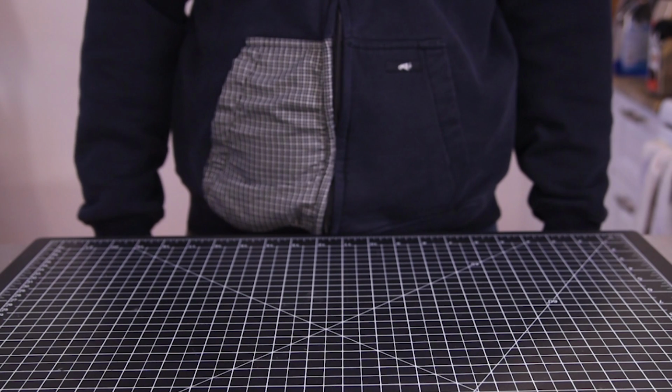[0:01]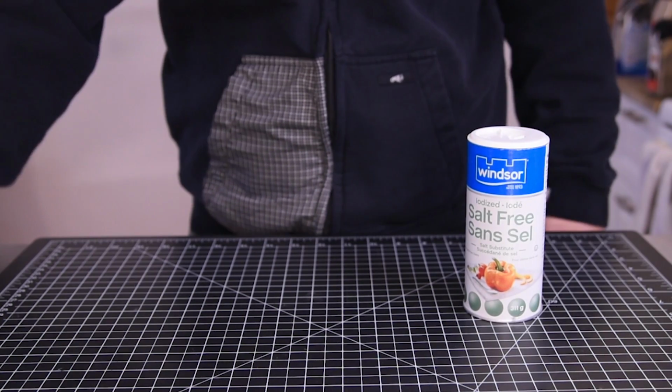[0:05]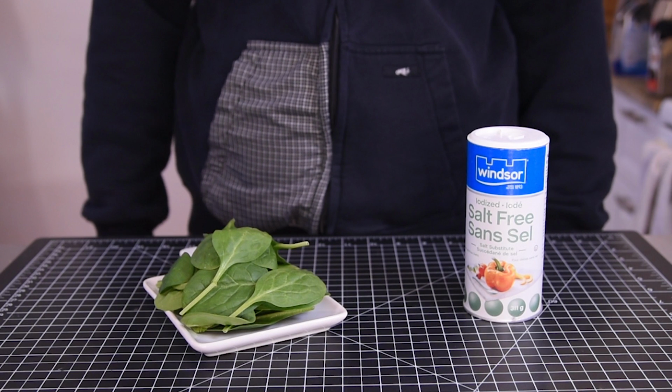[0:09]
Today we're going to be talking about antimatter, so let me just get some really quick. Here we go. And a little more. Perfect. Now, at this point, you're probably thinking that I've finally lost it and the quarantine is getting to me, but fear not, internet stranger, I'm no crazier than I was before.
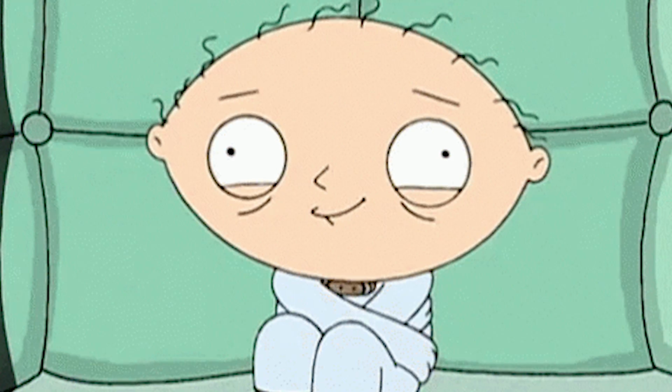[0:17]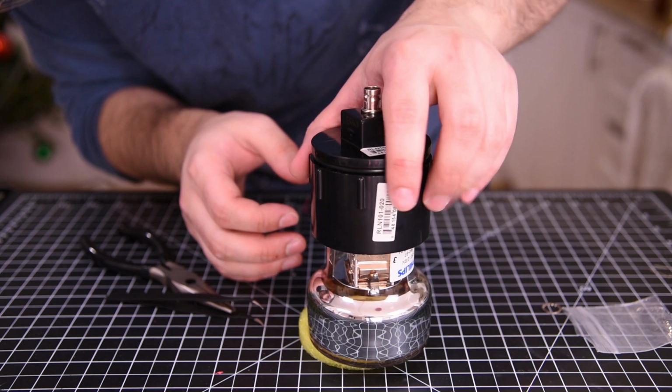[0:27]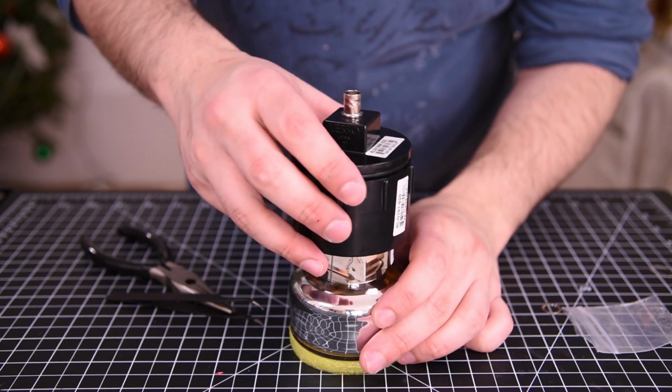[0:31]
I'm not sure if that makes that better, though. Anyway, these items do actually contain antimatter, albeit obviously very tiny amounts, otherwise they'd explode and take out most of the neighborhood as soon as they touched anything. Today, we're going to build a device that will let us detect the antimatter inside here, and in other common items. So first, what is antimatter?
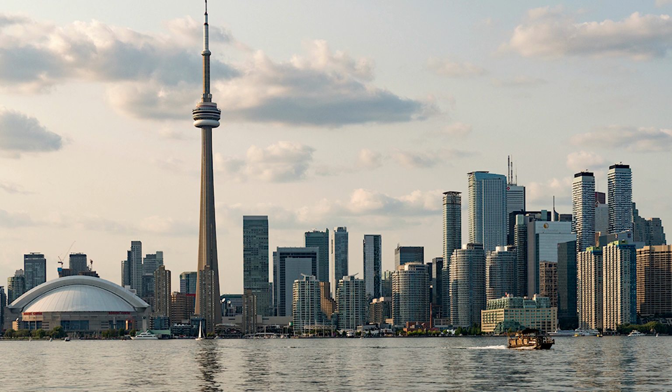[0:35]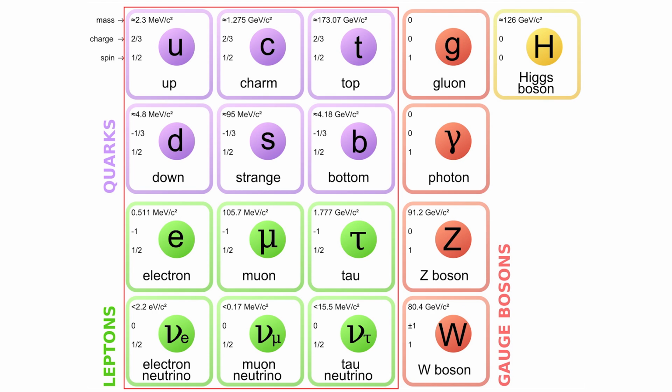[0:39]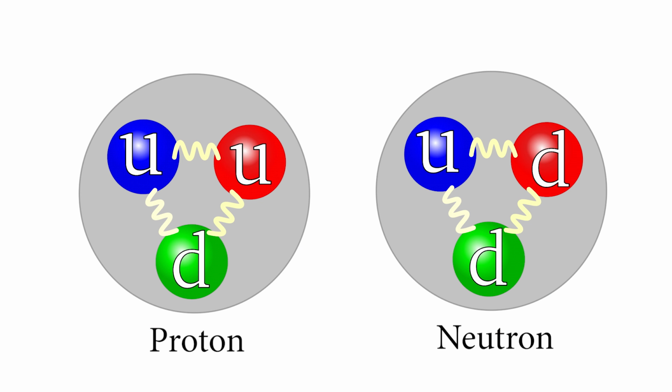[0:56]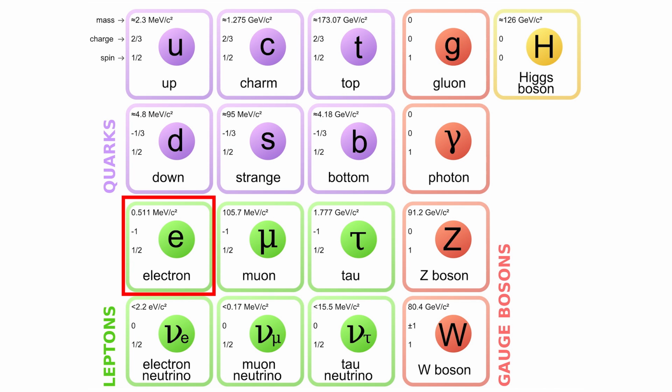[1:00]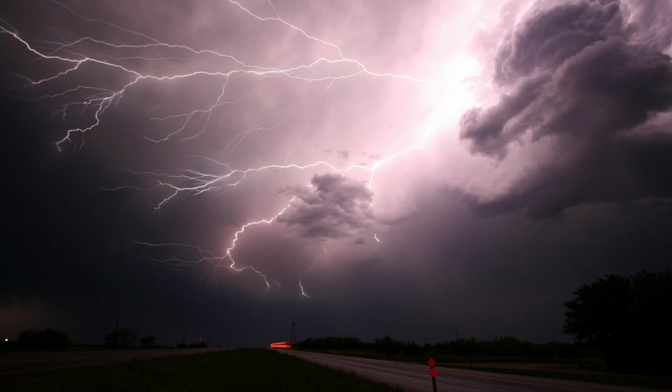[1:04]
Well, everything you've ever interacted with is, well, matter. That is a collection of 12 fundamental particles that can be mixed and matched to make atoms and molecules and just about everything else. These 12 particles make up the standard model of particle physics and are the basis for most modern physics. But of the 12, these three are the ones that you encounter the most. These two are called quarks, and when you get three of them together, they form protons and neutrons, which make up the cores of atoms.
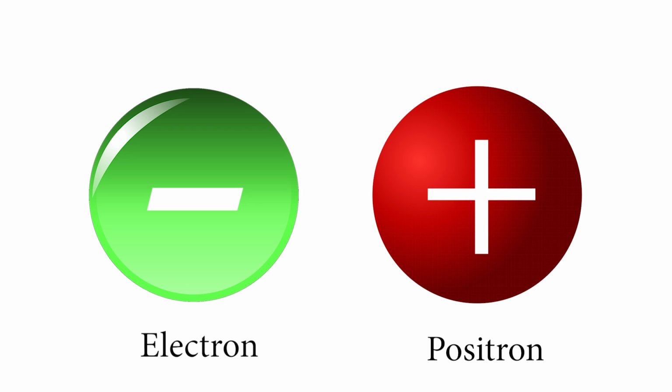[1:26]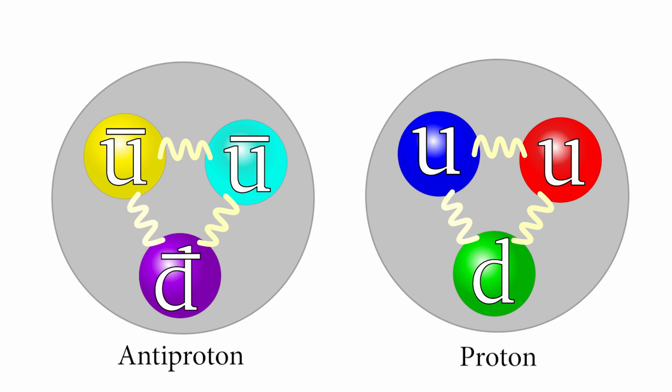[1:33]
And then this one is the humble electron, which is responsible for holding different atoms together, electricity, and lots of other phenomena. But as it turns out, all of these particles actually come in two flavors: matter and their antimatter counterparts. The weird part is that antimatter and regular matter are almost indistinguishable. They have the same mass and most of the same properties. The only difference is that their charges are flipped. So an electron, which is normally negatively charged, its antiparticle, called a positron, is, well, positively charged. And if you get enough antiquarks together to form an antiproton, it would be negatively charged, rather than positive like a normal proton is. But other than that, they're identical.
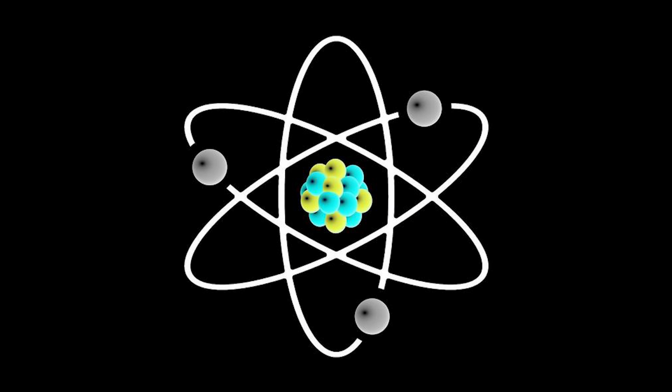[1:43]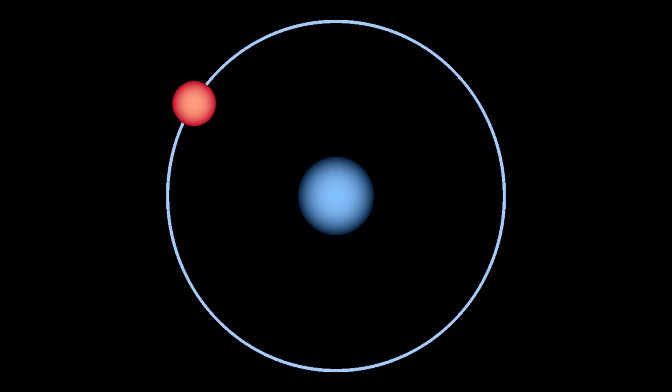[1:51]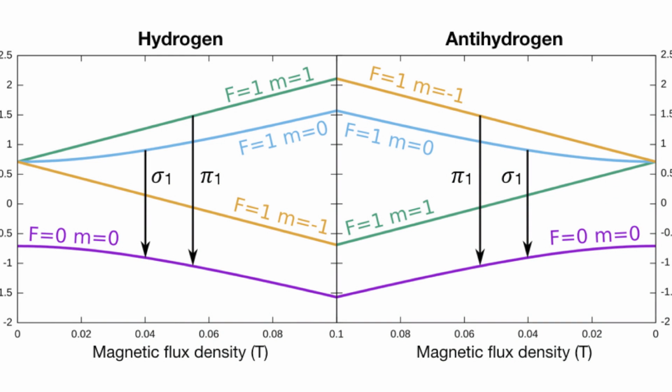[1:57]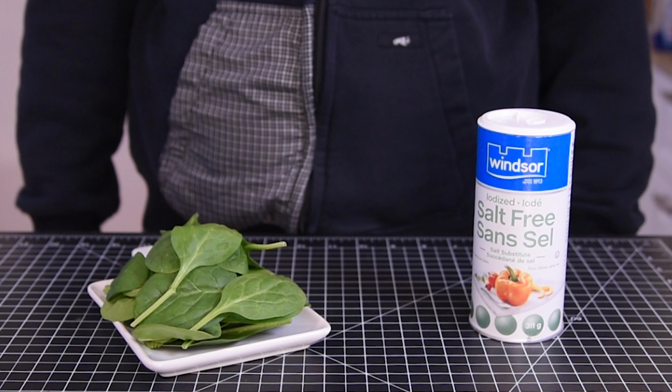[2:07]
You can actually make entire atoms using nothing but antiparticles, and their properties, as far as anyone can tell, are the same as normal atoms, other than that charge flip. Scientists have made antihydrogen, for example, using antiprotons and positrons, and when they looked at the spectrum of light it puts out when you excite it, it was identical to normal hydrogen, which, personally, I find fascinating and very, very weird. So now you're probably wondering, well, okay, how does that relate to my spinach and salt? Where's the antimatter in that?
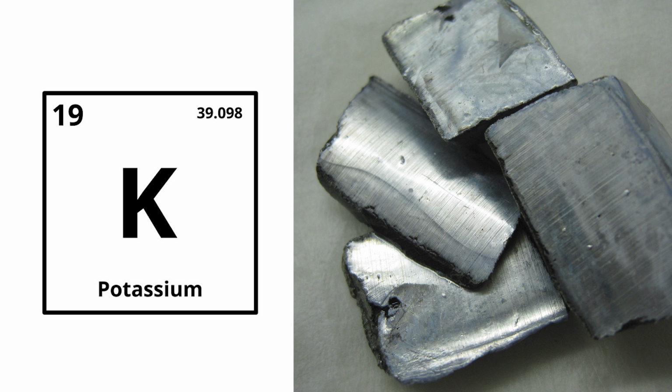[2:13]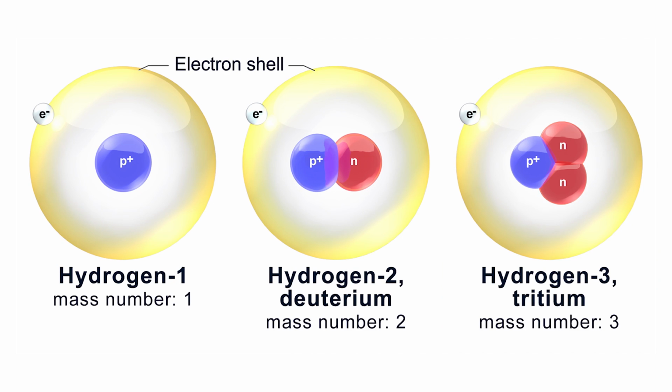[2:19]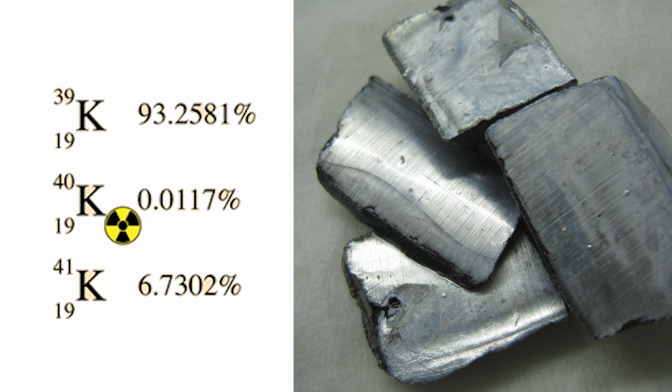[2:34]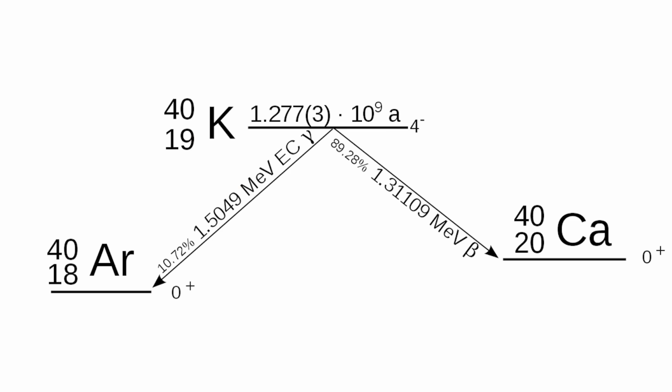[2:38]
The answer comes thanks to potassium. In nature, potassium comes in three forms, known as isotopes. Basically, these are atoms which have the same number of protons, but different number of neutrons, making some slightly lighter or heavier. Remember, we classify elements by the number of protons, so as long as that doesn't change, they're all considered the same element. One of these isotopes, potassium-40, is ever so slightly radioactive and unstable, so over time, it'll eventually decay into either calcium-40 or argon-40.
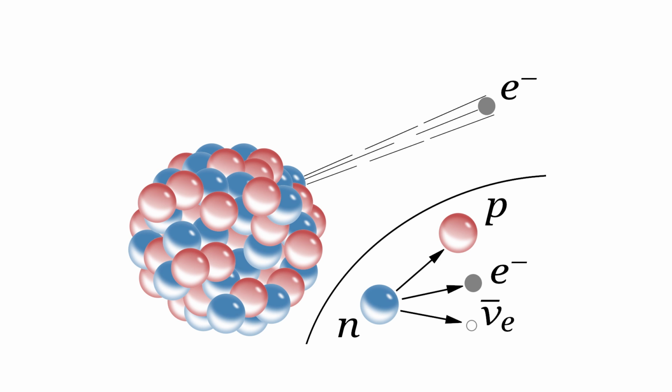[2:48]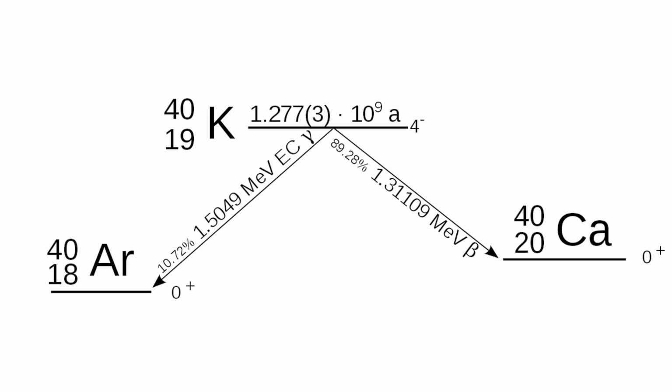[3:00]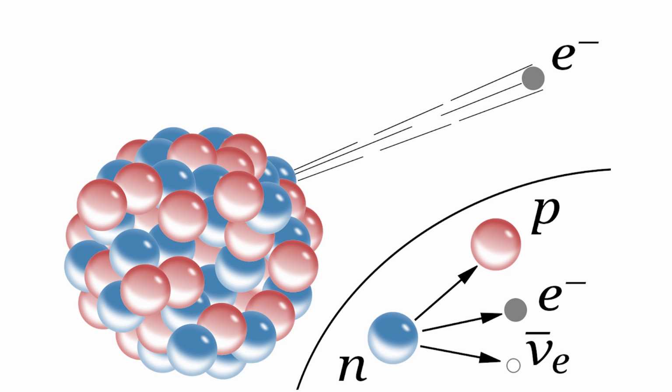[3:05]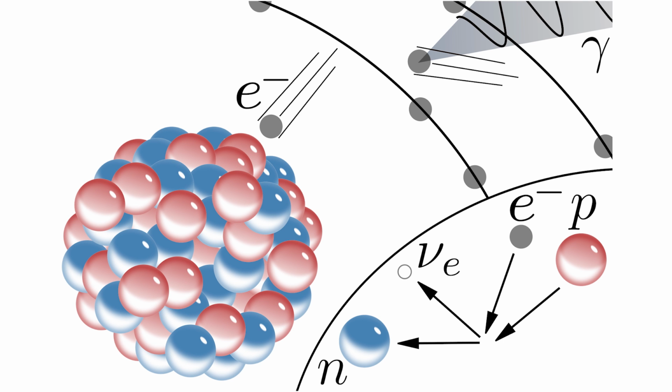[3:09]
On the whole, it mostly turns into calcium, doing so about 89% of the time. It does this via a process called beta decay. One of the neutrons in the potassium core spontaneously turns into a proton, and in the process, ejects an electron. And while this is cool, it's not what we're interested in. That other 11% of the time when it decays into argon is when things get exciting. Rather than one of the neutrons ejecting an electron, in this case, one of the protons can absorb an electron, and goes the other way, turning into a neutron.
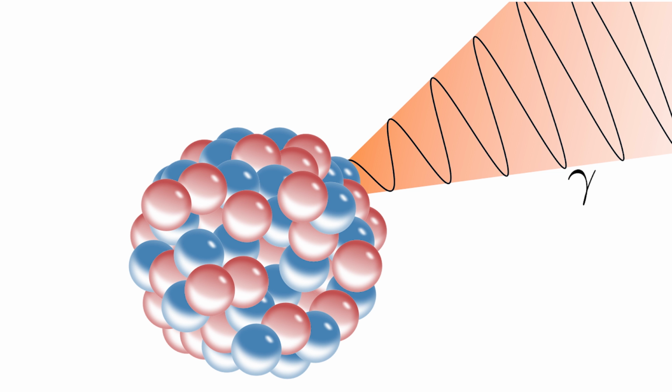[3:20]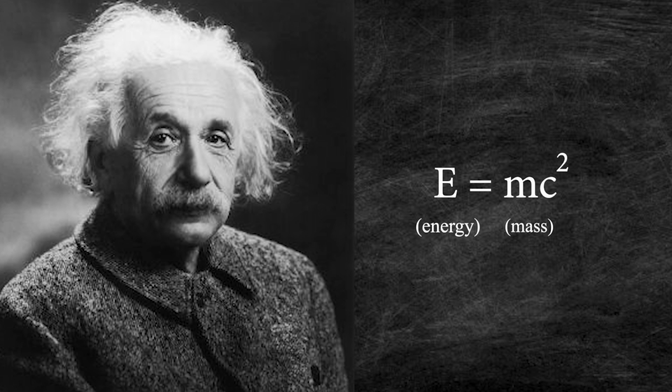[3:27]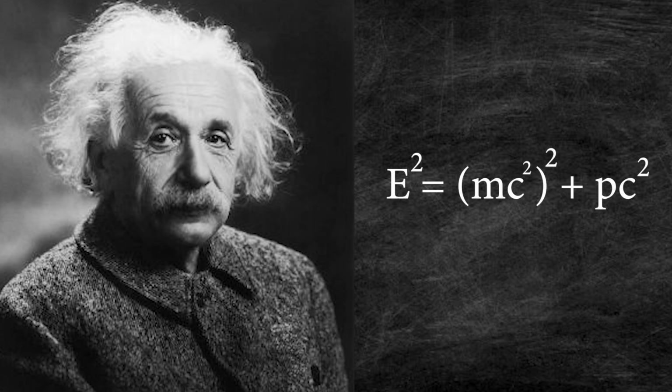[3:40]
But this leaves the core of the new argon atom with way too much energy, and it needs to get rid of it somehow. So it does this by emitting a very high energy form of light called a gamma ray. And it's that gamma ray where things get weird. Einstein's famous equation, E equals mc², shows that mass and energy can be sort of interchangeable. But while that is the most famous version of the equation, it only applies to very low energy situations. The full equation is E squared is equal to (mc²) squared, plus (pc) squared. Basically, this means that energy is actually proportional to both the mass and the momentum of a particle.
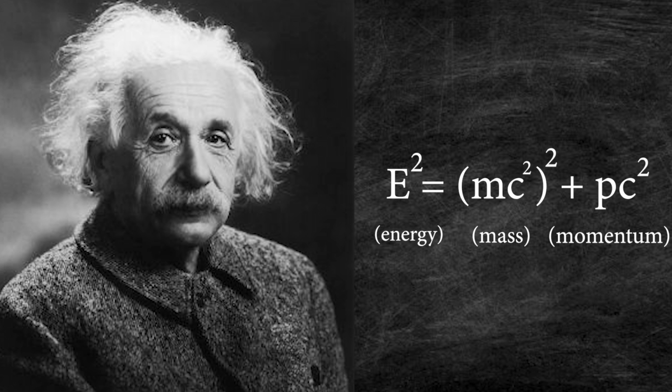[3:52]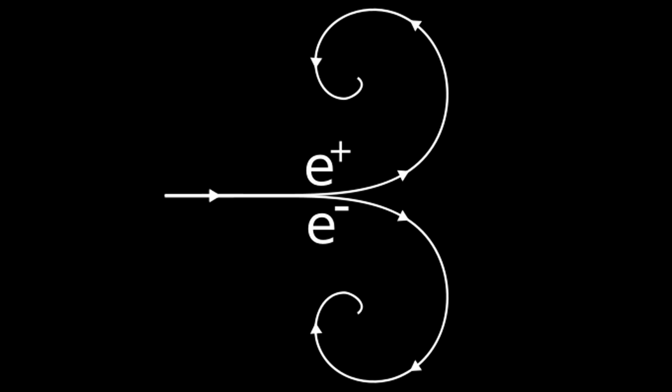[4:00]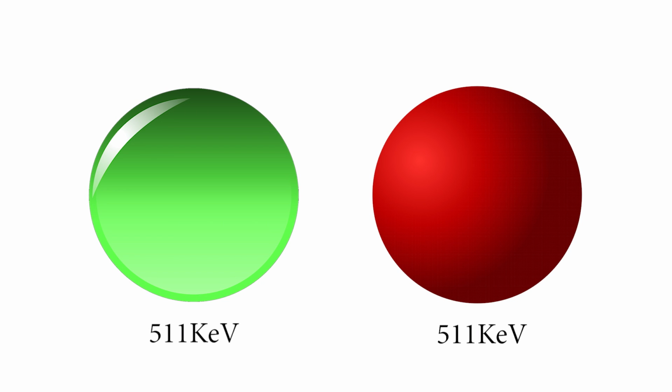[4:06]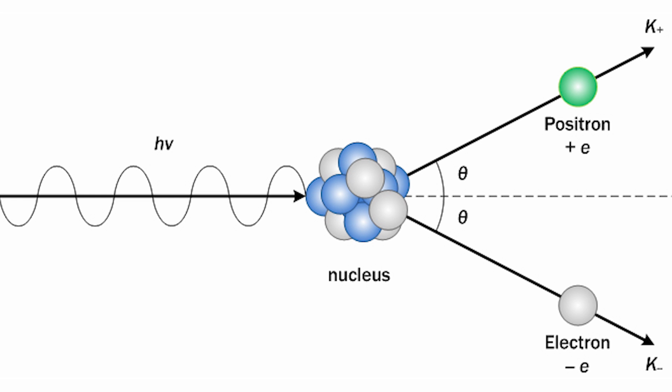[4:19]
So in a sense, if you can provide enough energy to cover the mass of a particle, you can generate new particles, basically out of nothing. But there's a catch. To make new particles, you always have to make two at a time. This is called pair production. An electron has a rest mass of 511 kiloelectron volts. And a positron, being otherwise identical to its matter counterpart, also has a mass of 511 kiloelectron volts. During pair production, you always make one matter particle and one antimatter particle. So in this case, all you need is something with a combined energy of greater than 1022 kiloelectron volts, and you can make a pair of particles.
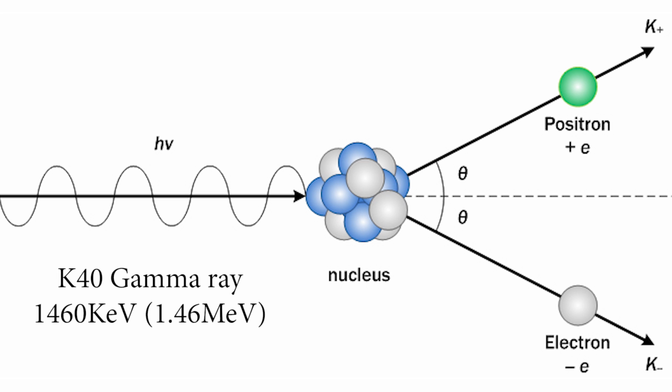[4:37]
Remember that gamma ray from the potassium decay? It has an energy of 1460 kiloelectron volts, which means that it passes the threshold for pair production. But some basic math shows that 1460 minus 1022 leaves 438 kiloelectron volts left over.
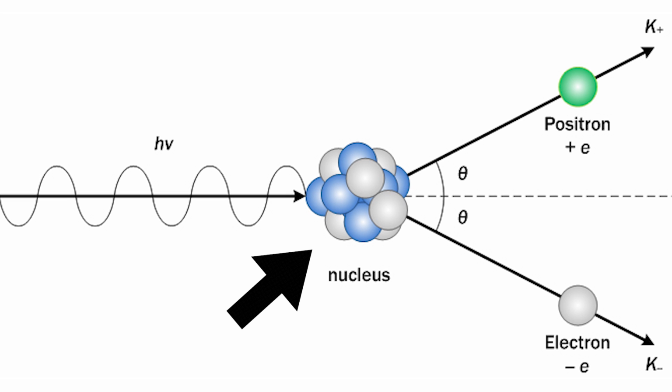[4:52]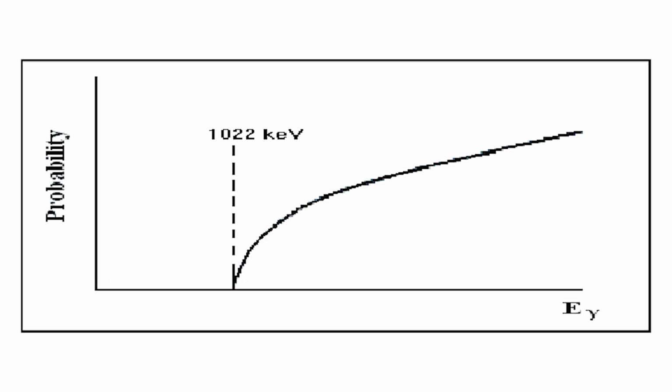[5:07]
So in order for pair production to happen, a third criteria needs to be accounted for. The gamma ray needs to pass near an atom. This way, the particles can be formed, and it can pass off that excess energy as momentum to the atom, giving it a little shove. When these conditions are met, we occasionally get two new particles, one of which is antimatter. When I say occasionally, though, I mean it. This does not happen with every single gamma ray.
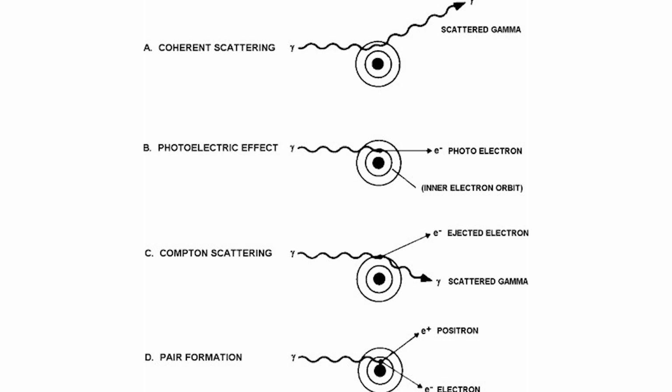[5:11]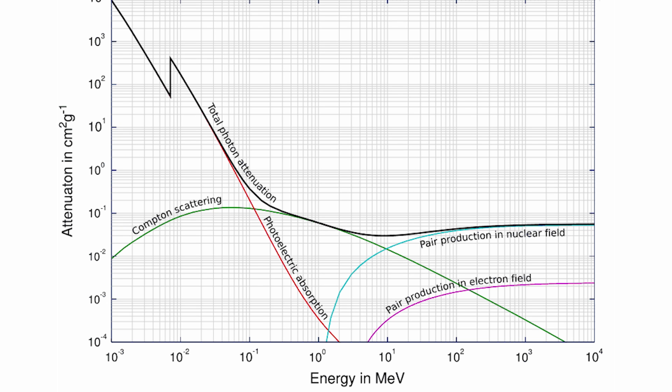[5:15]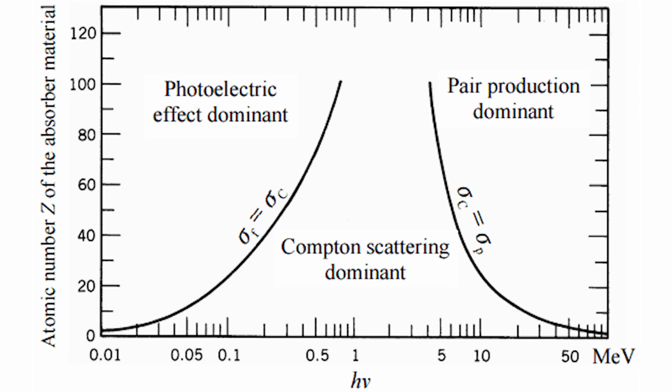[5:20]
There are basically four ways that a gamma ray can interact with matter, and the probability of each method changes based on the energy of the gamma ray. Past about 1,000 kiloelectronvolts, or 1 mega electron volt, while it is possible to get pair production, the probability still isn't very high. But as you approach 10 mega electron volts, the probability climbs significantly.
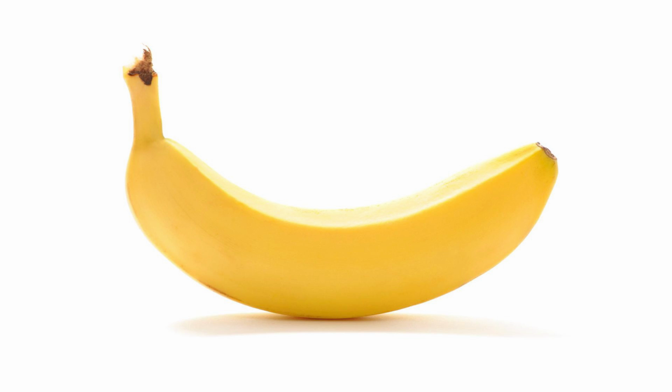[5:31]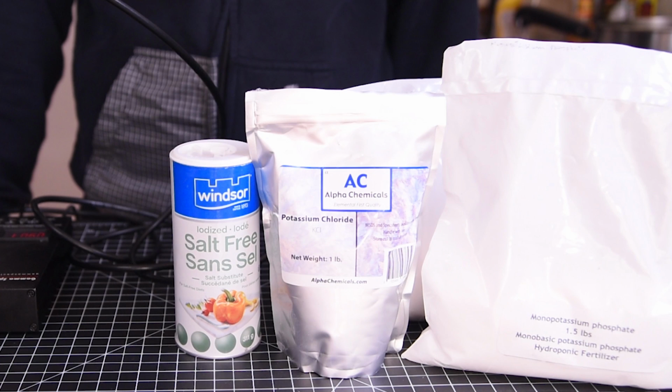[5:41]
So, for your average banana, for example, which contains approximately 350 milligrams of potassium, you get one positron every 75 minutes. As you can imagine, that would make detecting this very difficult. So, to make the probability higher, and hopefully detectable, I'll be using about 2 kilograms of various potassium salts to provide enough potassium-40 that I can more easily detect the positrons.
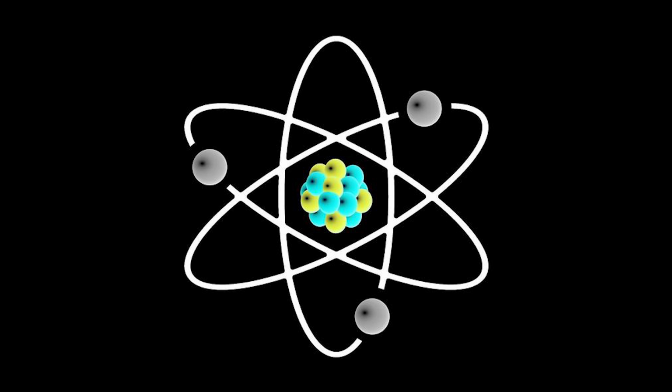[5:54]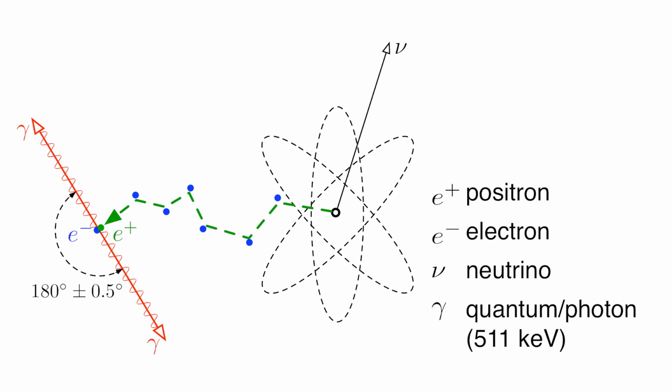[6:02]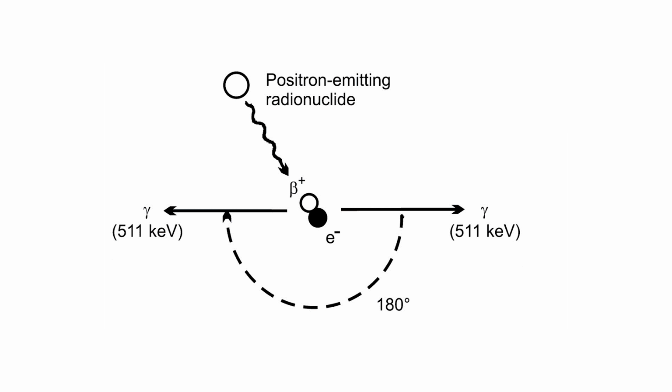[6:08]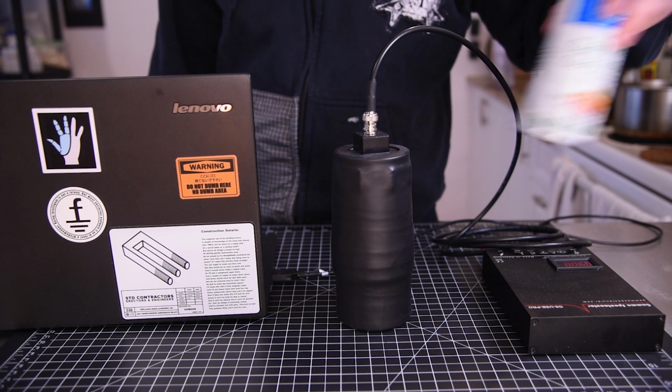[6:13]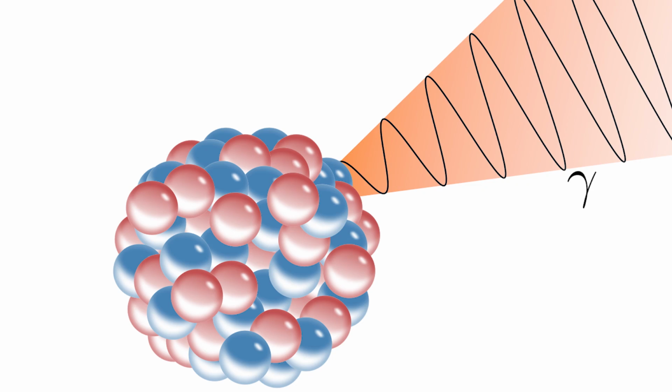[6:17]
So now we've got our antimatter, how do we detect it? Well, antimatter doesn't tend to exist very long on Earth because of the sheer number of matter particles everywhere. As soon as that positron comes in contact with an electron from a nearby atom, the pair annihilate, and release two more gamma rays, this time each carrying 511 kiloelectron volts of energy. Using a device called a gamma ray spectrometer, we can detect not only that first gamma ray from the potassium, but also the resulting annihilation gamma rays from the positrons that are formed.
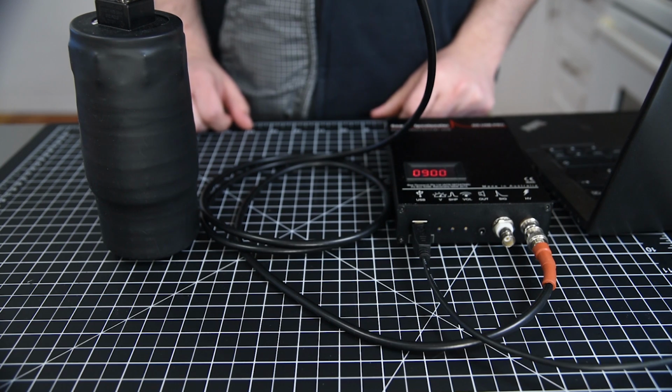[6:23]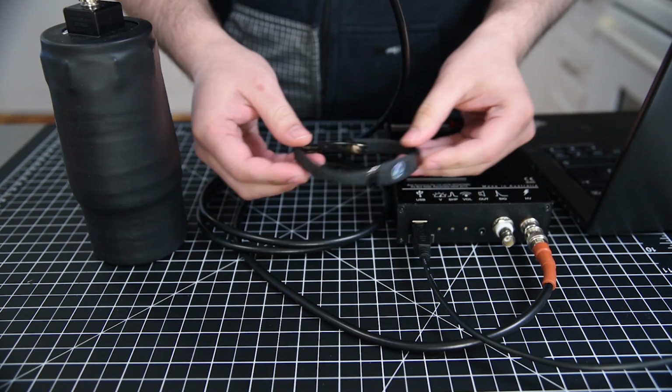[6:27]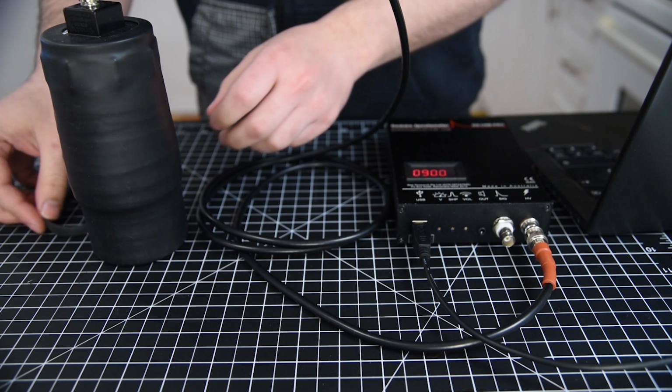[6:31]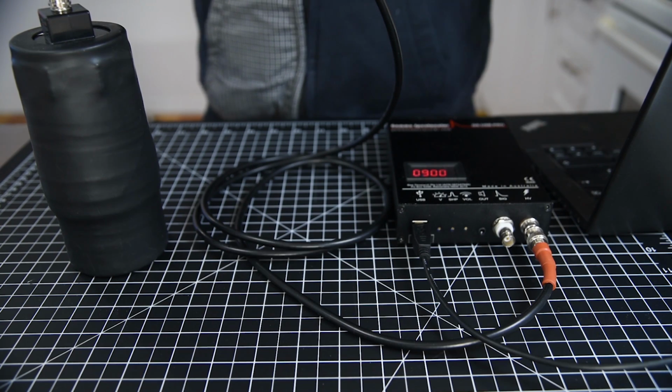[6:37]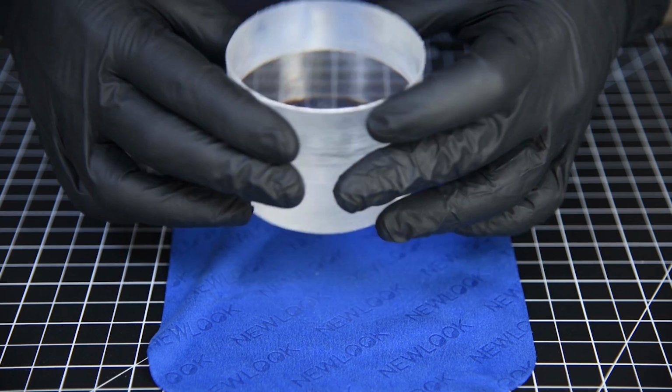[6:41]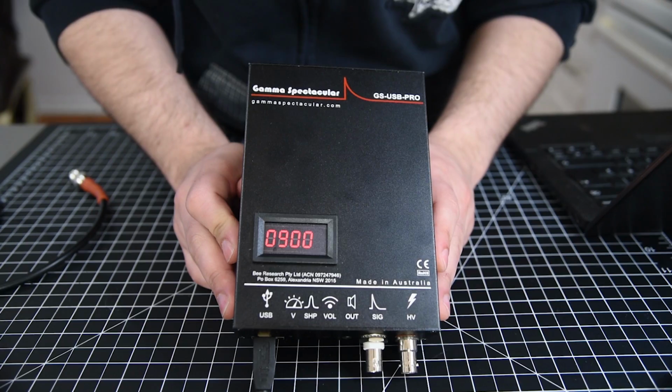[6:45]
So, let's build one! This is my gamma ray spectrometer, and we actually used it in my last video to determine what sort of radioactive material is in these quack medicine negative ion bracelets. If you haven't already seen that, I'd highly recommend checking that video out. The spectrometer is made of three pieces. A crystal, which turns any gamma rays that hit it into visible light, a special vacuum tube, which will turn the light into electrical signals, and a box which takes those signals and feeds them into a computer so we can interpret them and make a spectrum.
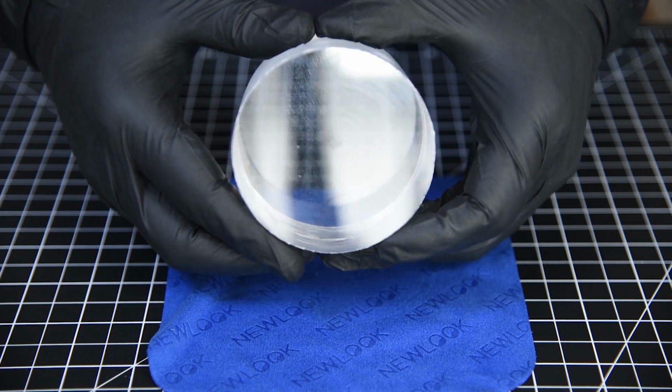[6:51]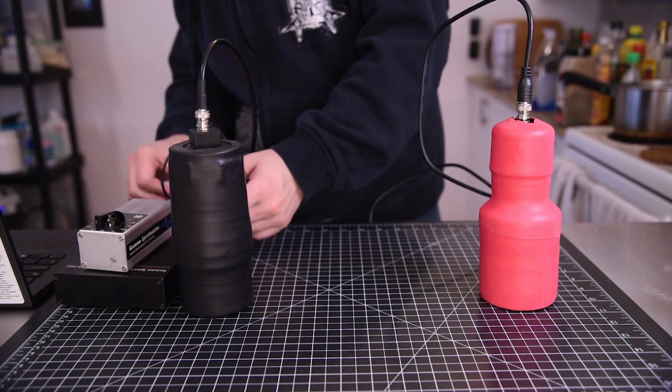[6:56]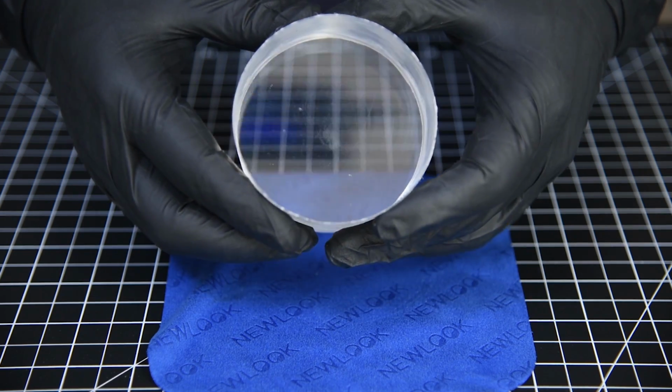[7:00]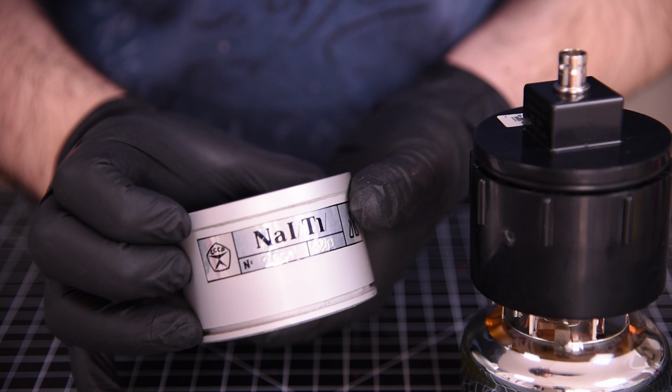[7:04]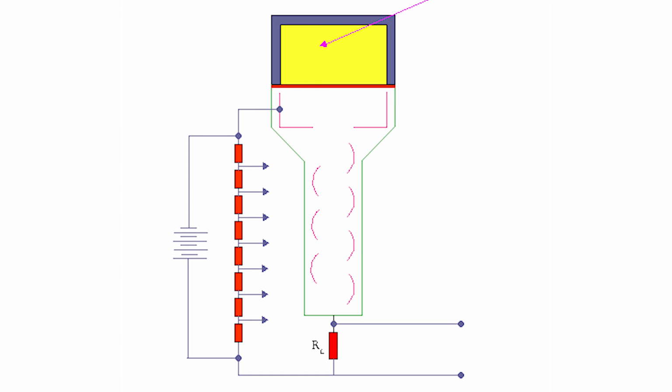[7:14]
Let's start with the crystal. There are a variety of different materials that'll work for this, and I actually built two probes using two different materials. The first is called bicron, and is actually a special type of plastic. The other is sodium iodide, doped with a small amount of thallium. Bicron is cheap, so you can get huge chunks of it for not a lot of money, but has a significant flaw that makes it basically useless for our purposes. When a gamma ray hits one of these materials, the flash of light that's emitted is approximately proportional to the energy of the gamma ray. Or at least, it should be.
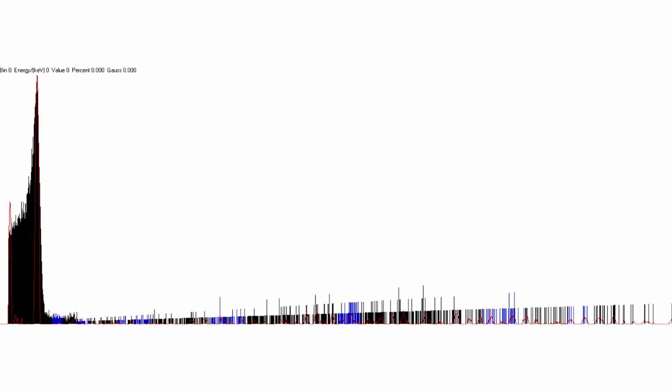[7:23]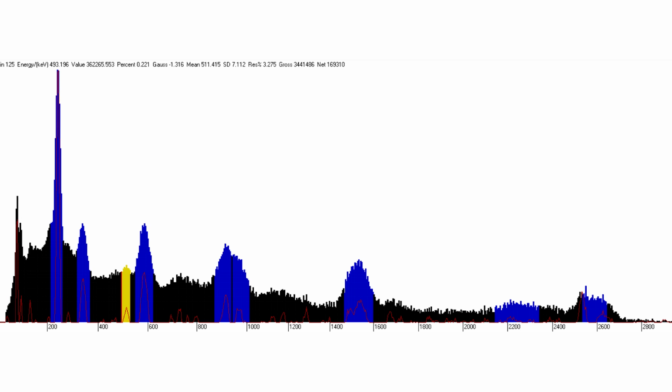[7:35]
With bicron, the flashes of light are kind of all over the place, and while it almost always makes a flash of light, you can't actually use them to figure out the energy of the incident gamma ray because it's just so sloppy. Sodium iodide, on the other hand, is much better but also more expensive, and can be used to figure out what energy the gamma ray was, as the flashes are proportional to within about 6-8%. Still not perfect, but very reasonable and sufficient for our purposes.
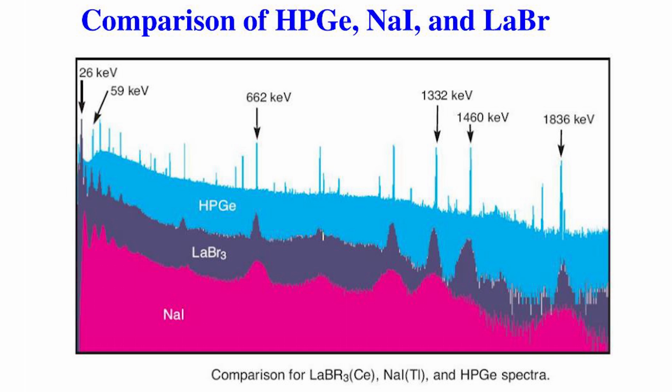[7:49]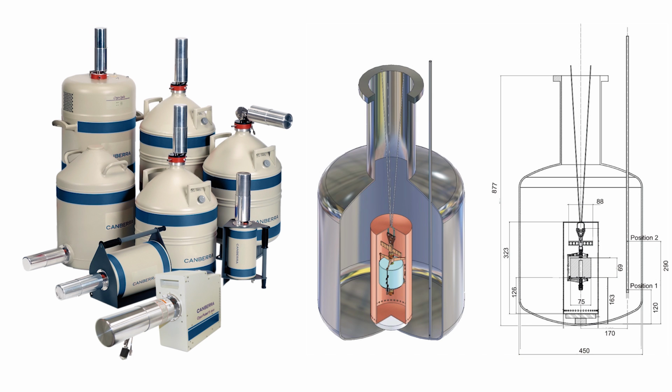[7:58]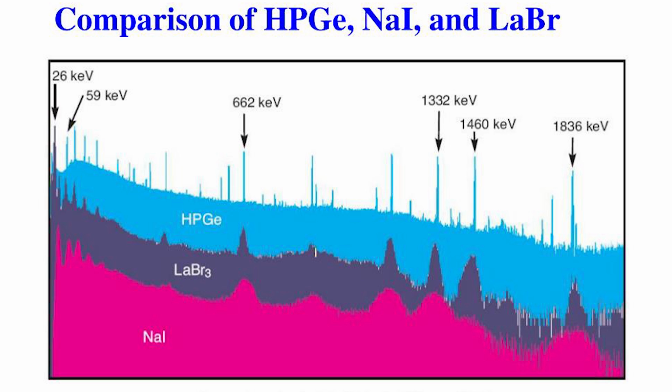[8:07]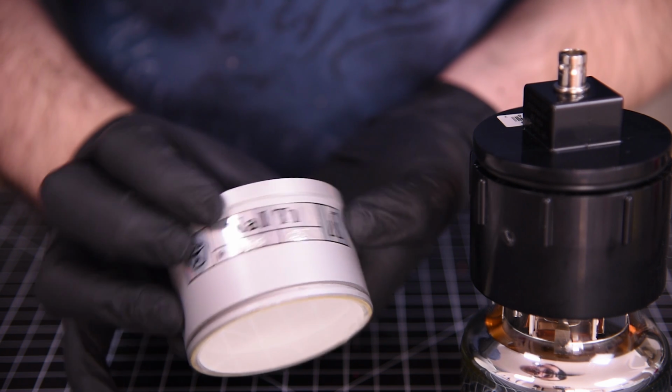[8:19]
Beyond sodium iodide, the price of crystals shoots up very quickly, but so does the quality of the spectrum they produce, and the size of crystal you need to get a good spectrum decreases as well. Ultra-pure germanium, for example, needs to be cooled with liquid nitrogen to work, but gives flashes that are within 0.2% accuracy. Here's two spectrums showing the difference between germanium and sodium iodide. You can see how much sharper the peaks are with germanium. But again, for our purposes, it would cost thousands of dollars to set up. Whereas my sodium iodide crystal only cost about $150 because it had a small crack in it.
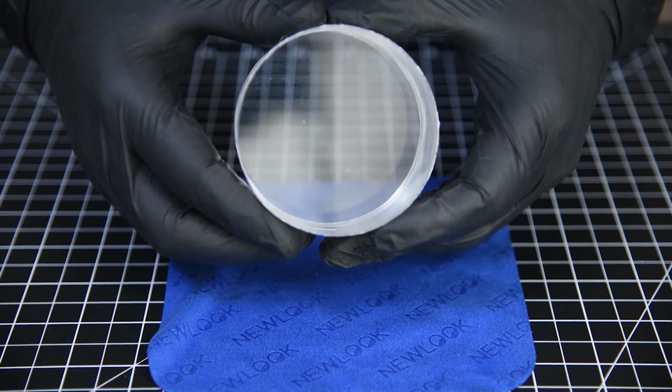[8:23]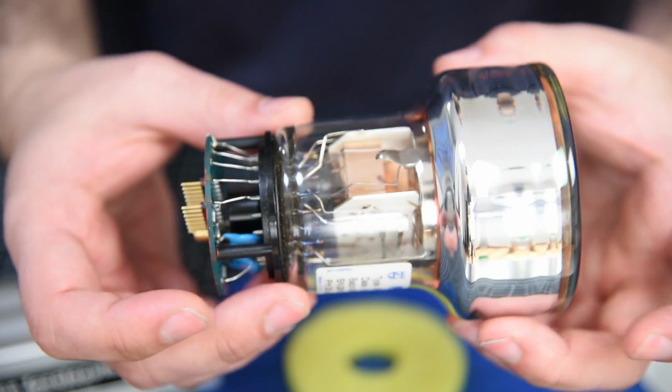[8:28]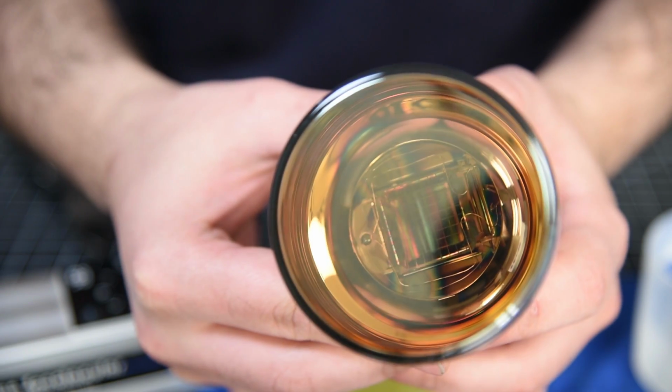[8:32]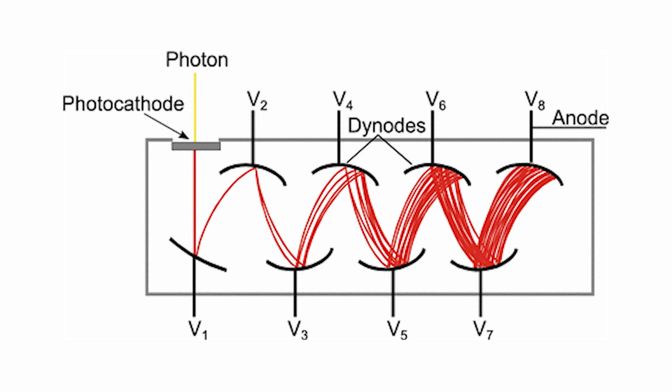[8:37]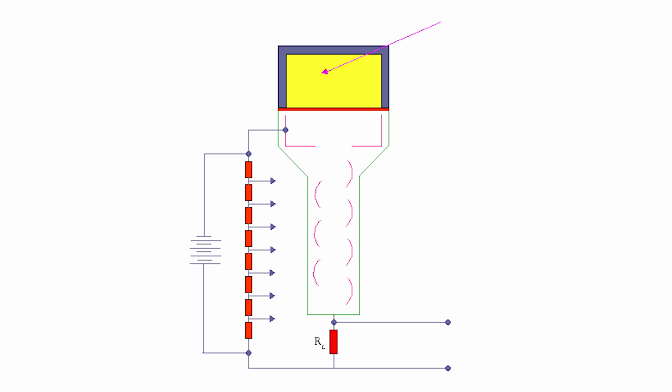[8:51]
What's really cool is that spike is also proportional. So if more photons hit the first plate at once, more initial electrons are knocked off and the end pulse is larger.
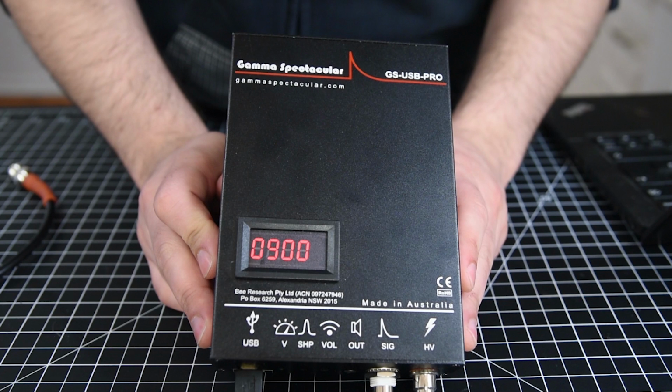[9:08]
Finally, this box is where all the magic happens. It's the GS USB Pro from a company called Gamma Spectacular. My friend Steven Sesselman runs the company and was kind enough to send me this one. Honestly, I love this thing. It's really easy to use and it's packed full of features. And compared to the price of a gamma spectrometer normally, it's really quite affordable.
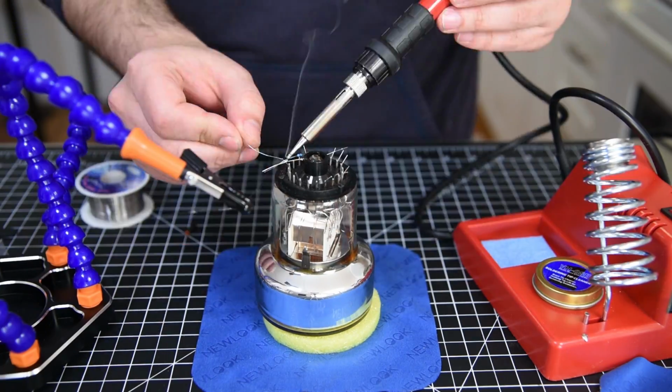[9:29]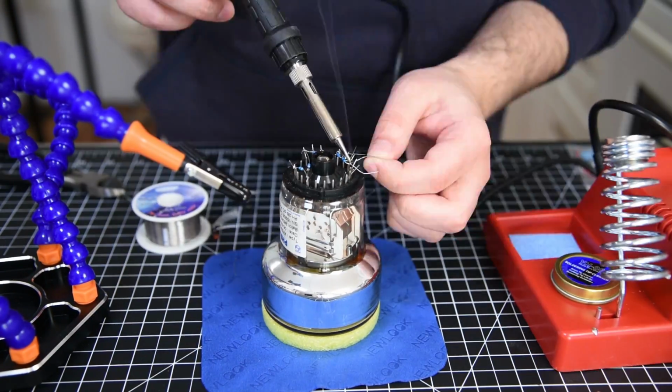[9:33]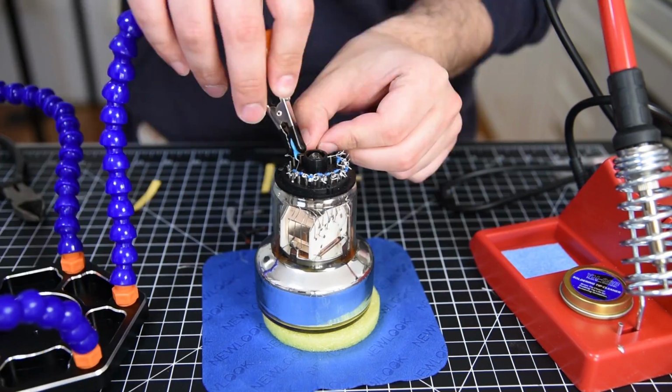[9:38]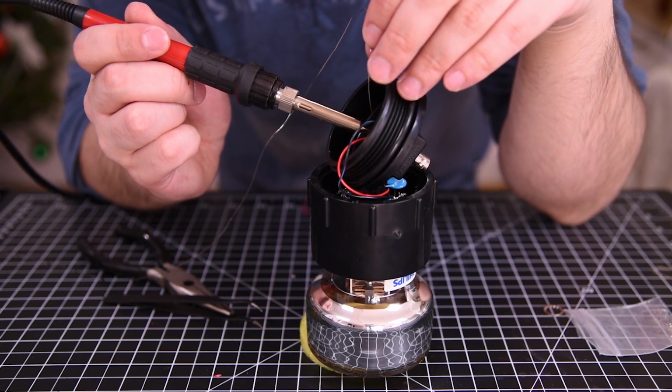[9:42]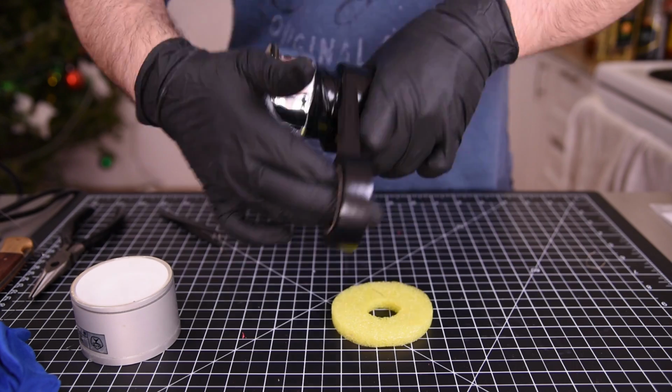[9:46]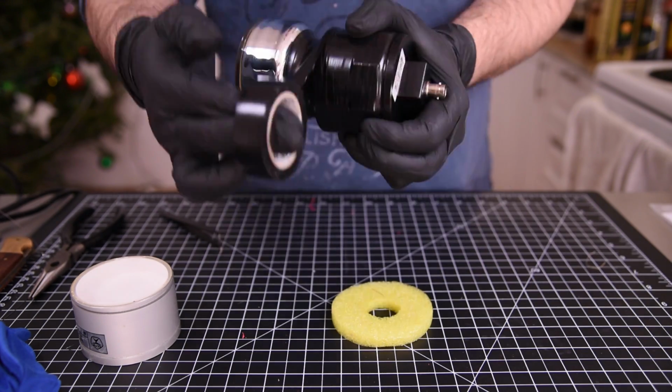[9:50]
I originally got the photomultiplier tube as a kit that came with all the instructions for setting it up, and it was actually quite easy. It was a little bit of soldering to set up the high voltage lines, and then mounting the BNC connector in an end cap made of PVC pipe fittings. Then everything was held together with black electrical tape. This not only holds everything together, but also insulates the tube so that no stray light can get in and ruin your readings.
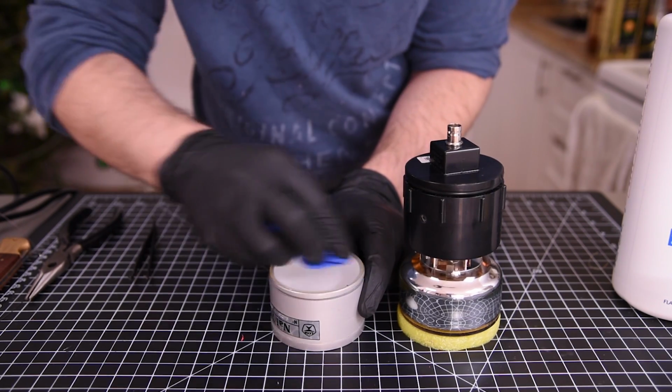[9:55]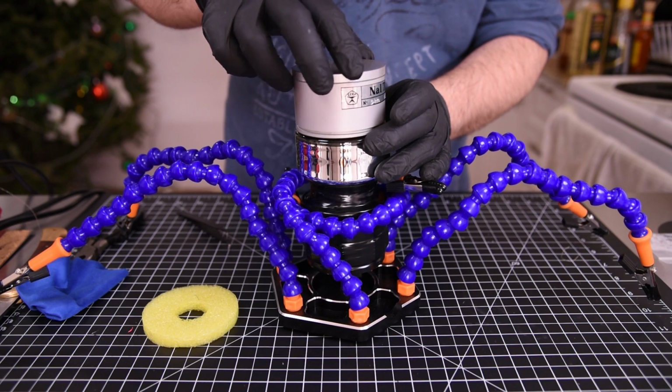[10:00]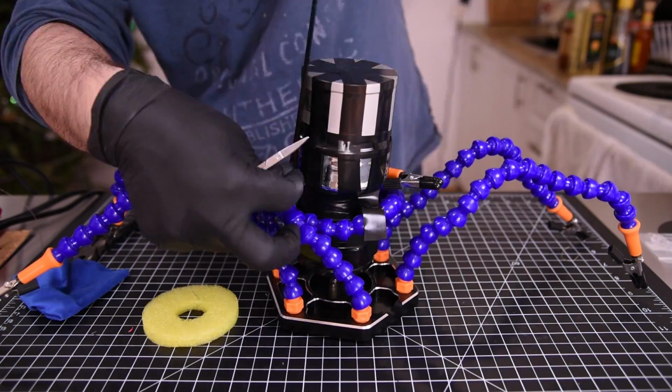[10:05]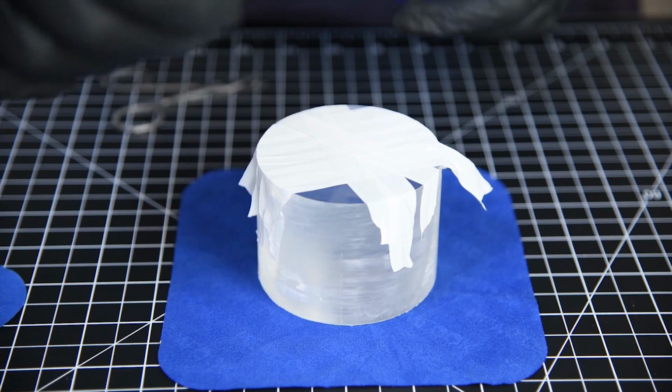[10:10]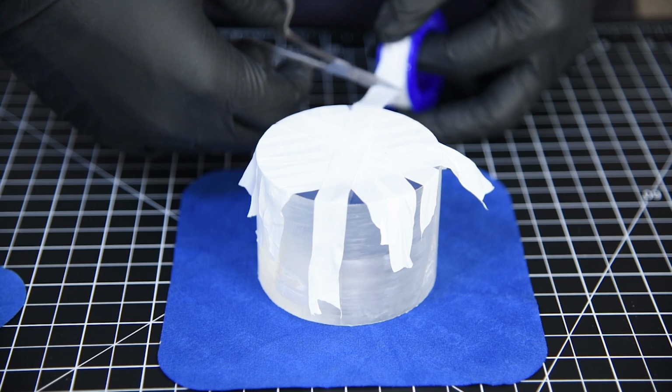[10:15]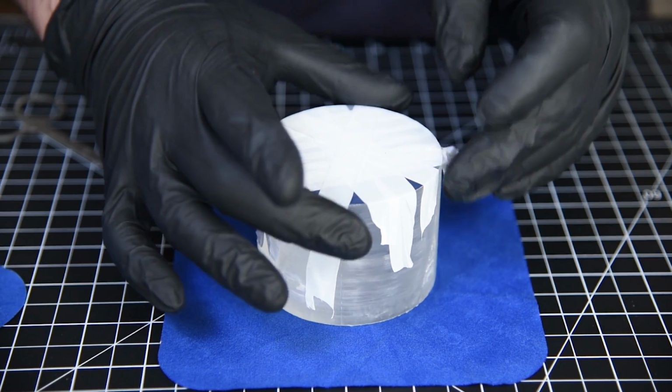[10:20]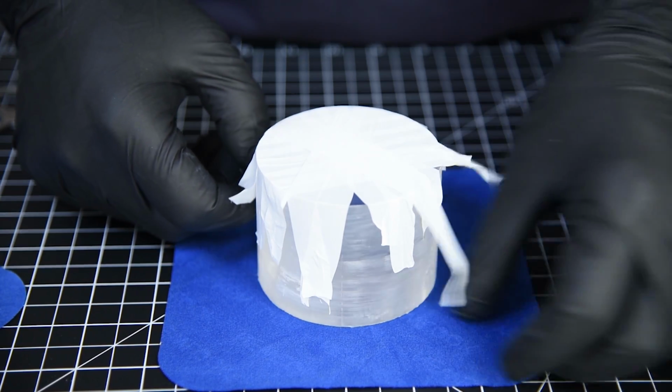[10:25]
Before it was totally taped up, though, the crystal, or bicron, was cleaned with a microfiber cloth, and some silicone optical coupling grease was added to the face. The crystal was then mounted onto the tube and carefully rubbed back and forth to distribute the grease before being taped down permanently. Then the whole thing was covered in a second layer of tape to really make sure it was light tight. With the bicron, there was actually an extra step in there where you have to wrap the outside in white Teflon tape to make sure any photons that are emitted inside are reflected back into the tube. That process was maybe the biggest pain ever, and took over an hour since the tape kept being statically attracted to my gloves and coming off.
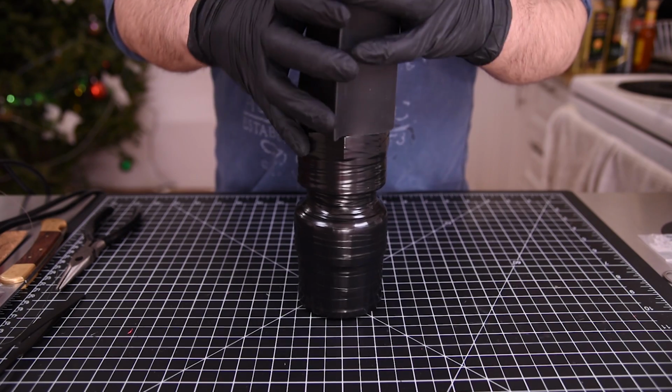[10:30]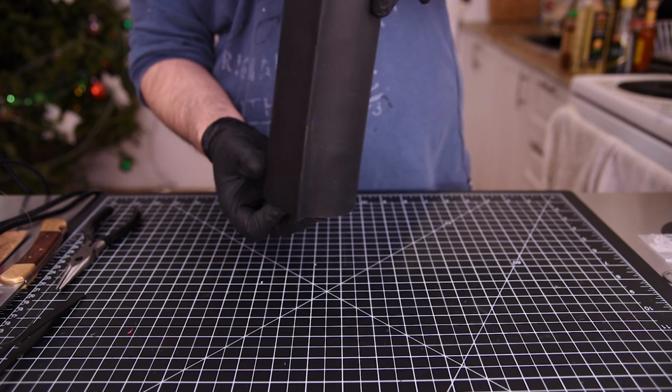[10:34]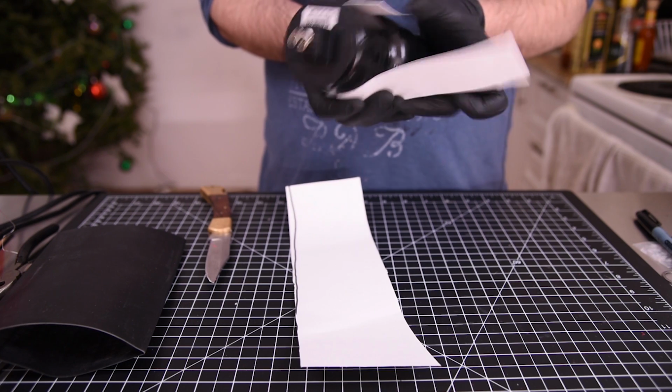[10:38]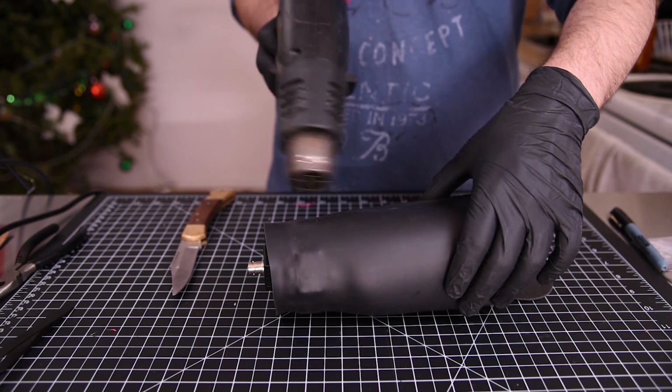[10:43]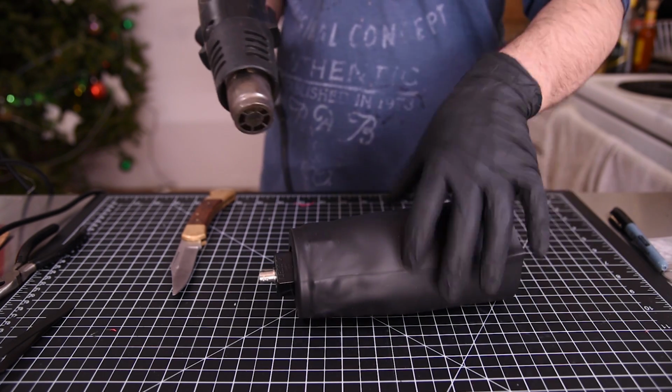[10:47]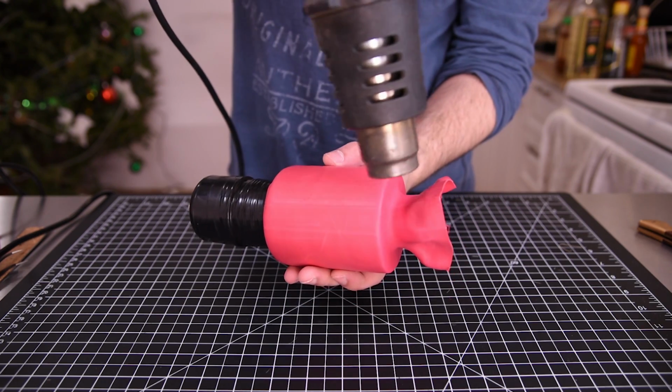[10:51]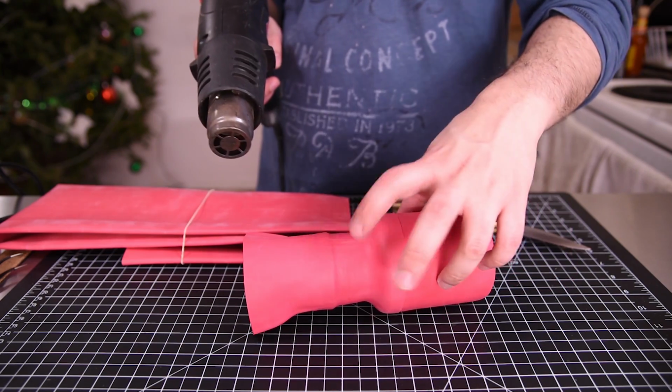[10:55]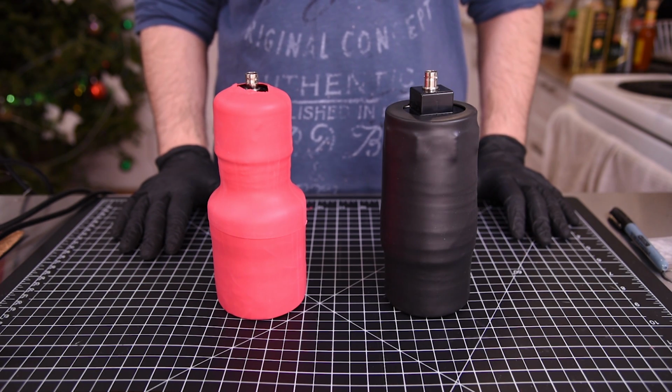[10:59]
Once everything was taped up and sealed, the last step to make this permanent is to add some heat shrink tubing to protect everything. For the sodium crystal, I added a little bit of thin cardboard to make the shape a little more even, since the PVC was a little bit chunky. Then I just slid the heat shrink over it and hit it with a heat gun carefully. I also added some foam to the crystal end to help protect it from bumps. For the bicron, the heat shrink was a wee bit too small, so getting it on was a nightmare and I ended up having to do it in two pieces. But when everything was said and done, I had two awesome probes ready for use.
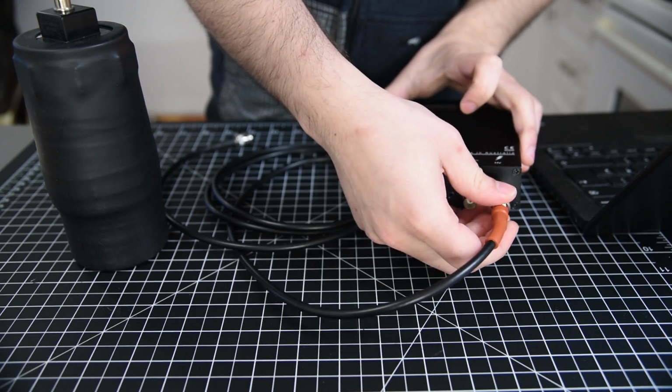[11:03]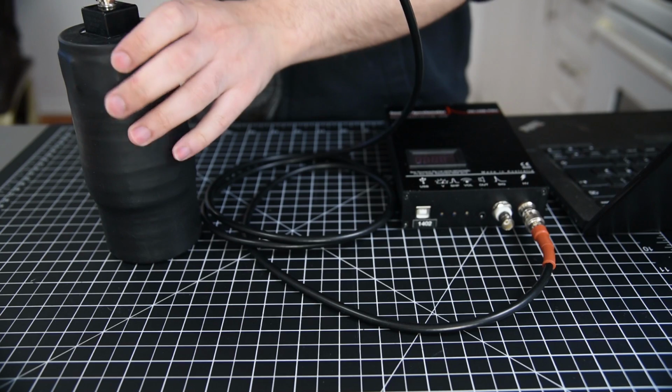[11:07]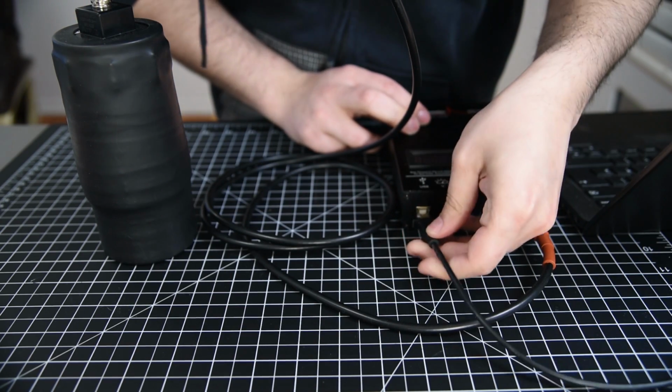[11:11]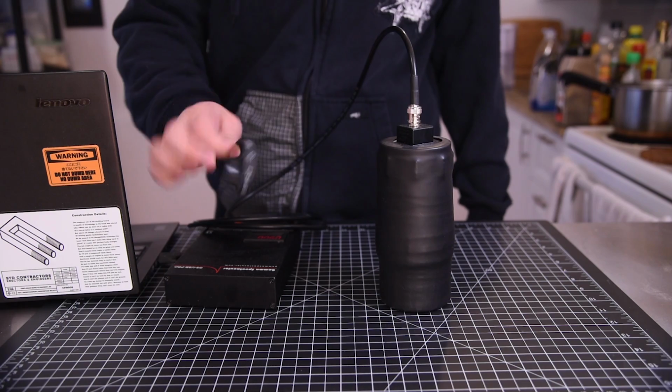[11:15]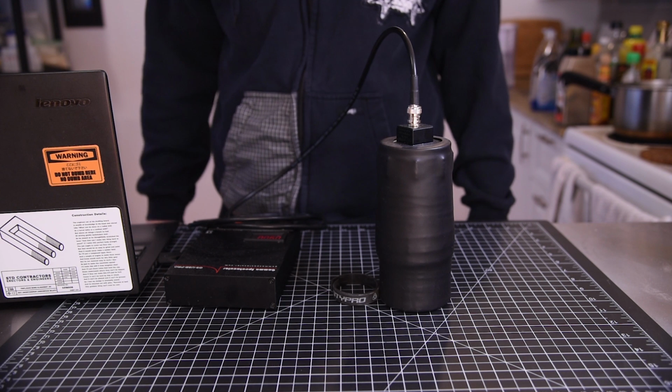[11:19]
I ended up picking up a special cable to connect the probe to the Gamma Spectacular since it uses a weird connector called safe high voltage, but the cable only costs 15 or 20 bucks from China. But other than that, everything just connects together easily and the box is plugged into my laptop via the USB port. The first thing I had to do was calibrate the detector, so I used one of the thorium-laced bracelets from the last video to do that.
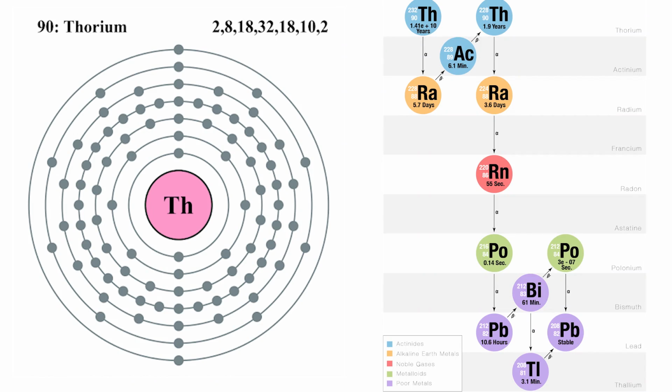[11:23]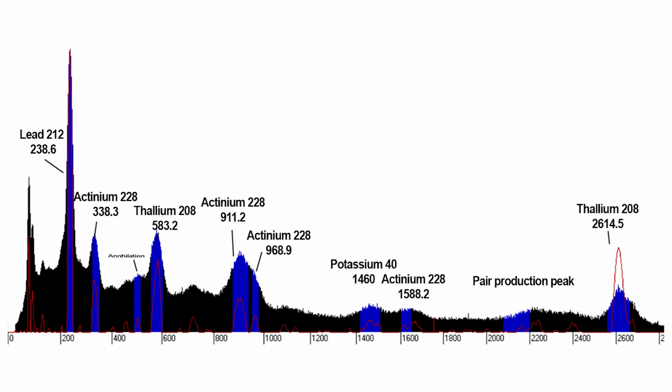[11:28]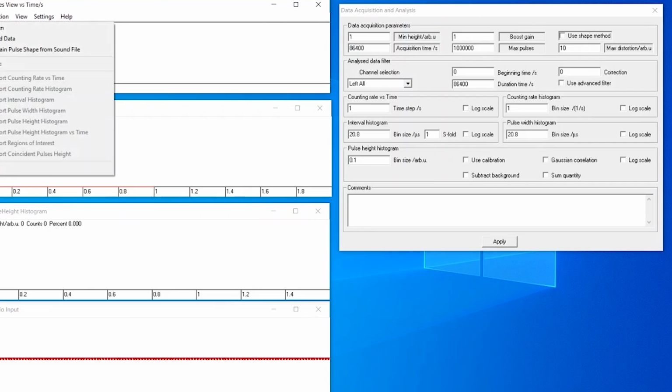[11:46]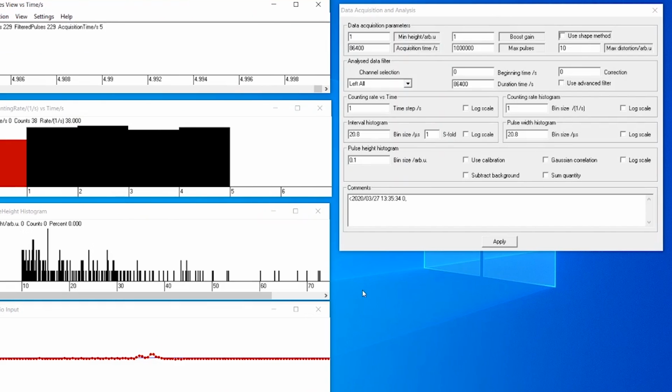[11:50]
Thorium, or rather the things it decays into, put out a variety of gamma rays of known energy, so I can use them to calibrate my detector. Steven provided me with a little calibration sheet which I've linked to below that lets you adjust the voltage you're feeding into the tube until the peaks are spread out in a linear fashion across the whole spectrum. This is important so that anything that I measure will give me an accurate reading of what energy the gamma ray was. I'm using a program called PRA, which takes the audio signal that the Gamma Spectacular puts out and turns it into a spectrum.
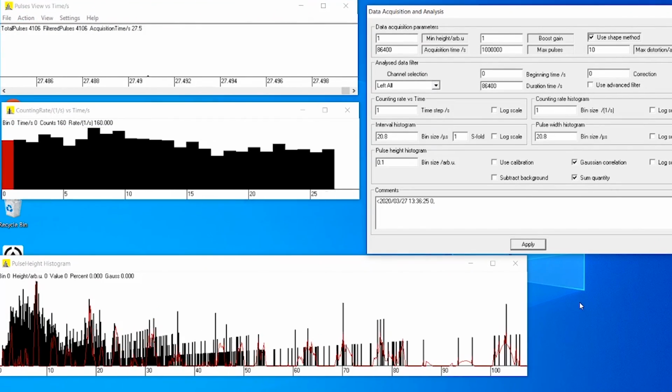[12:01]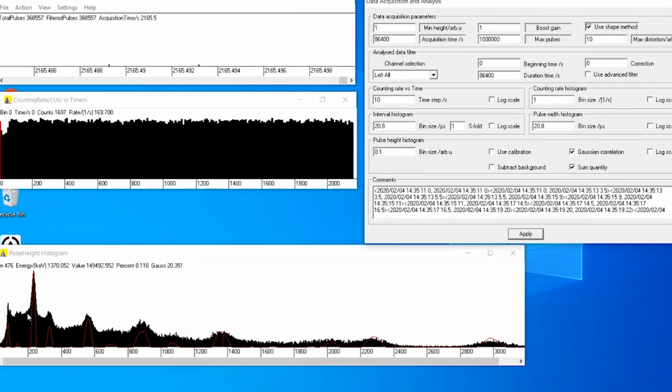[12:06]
First, I calibrate the peak shape of the audio signal by collecting about 1,000 pulses so that PRA knows what the pulses should look like. Then I capture a spectrum for about 15 minutes, and since I'm using a thorium source, I should get a series of peaks. I highlight each peak by clicking on it and then hitting either the F, G, or H key, which will highlight more or less of the spectrum. The goal here is to highlight just the peaks. If that's being a bit glitchy, I can just use the B and E keys to mark the beginning and end of a feature.
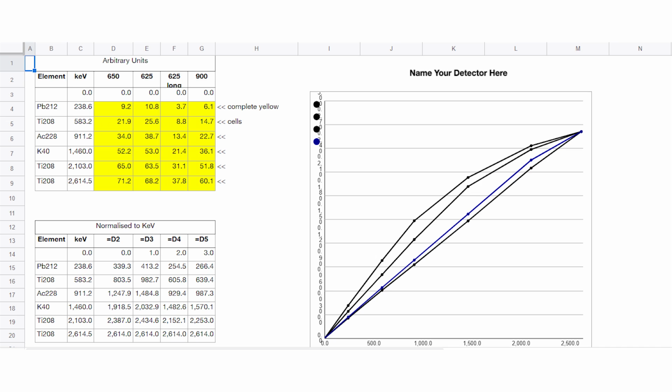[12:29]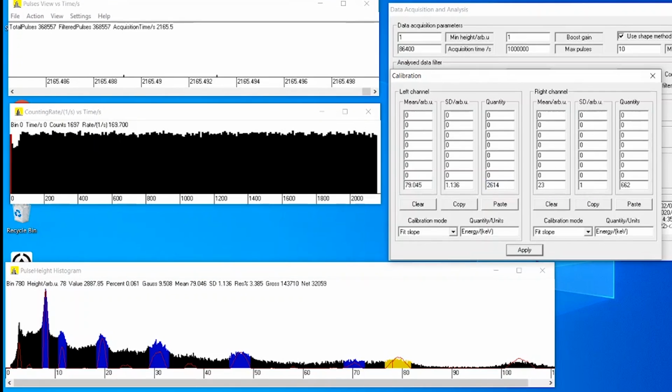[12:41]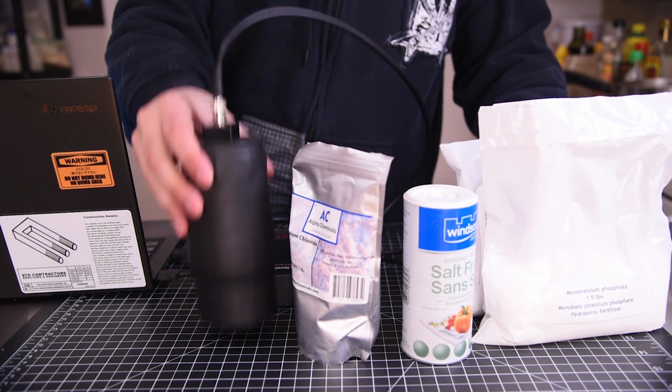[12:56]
With the peaks highlighted, the program gives me the mean values and standard deviation of each peak. These can be fed into that spreadsheet so that I can see if I've got the right voltage. If the graph is curved upwards, I turn the voltage down, and if the graph is curved downwards, I turn the voltage up, and I just repeat until the graph is flat. From there, I calibrate the actual energy of each peak by using the known values of the thorium decay chain and plugging the arbitrary unit values and known energies into the calibration window. After that, everything is set up and the spectrometer is ready to use to measure some actual samples. Let's start with the potassium salts to give the best chance of detecting the annihilation.
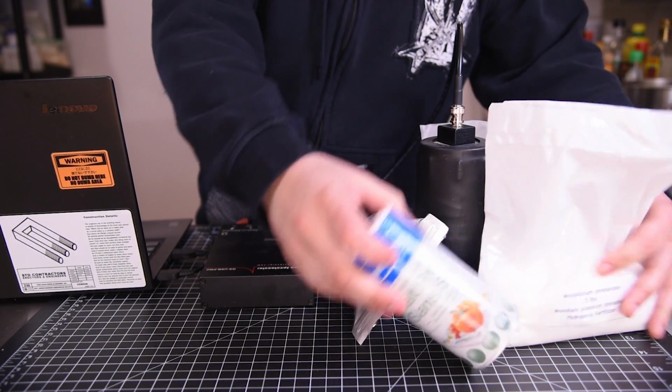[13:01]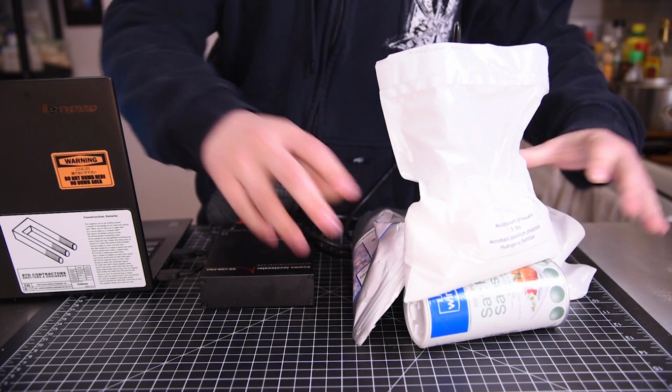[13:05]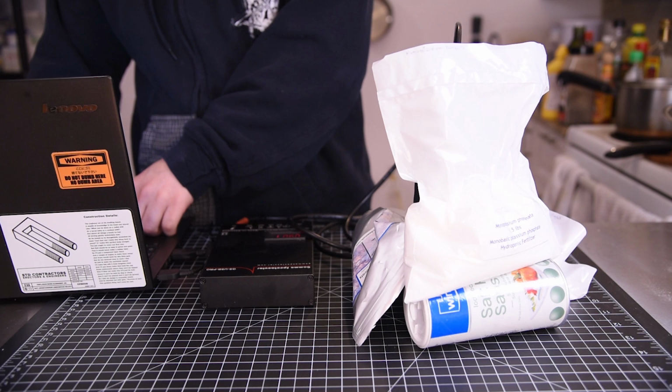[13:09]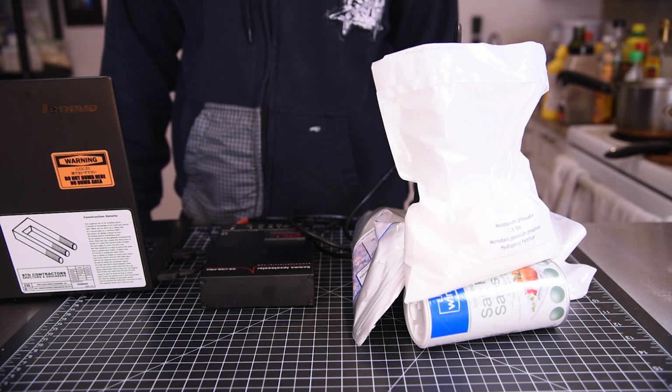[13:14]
If we can see it, then we can be sure that anything else that shows the potassium peak should be doing the same, even if it's harder to detect. Here I've got a mix of potassium chloride and potassium phosphate, for a total of 2.1 kilograms of salt. I just piled everything around the detector and let it run for a day to give a nice clear spectrum, but you'd see the potassium peak in even a minute of starting the recording.
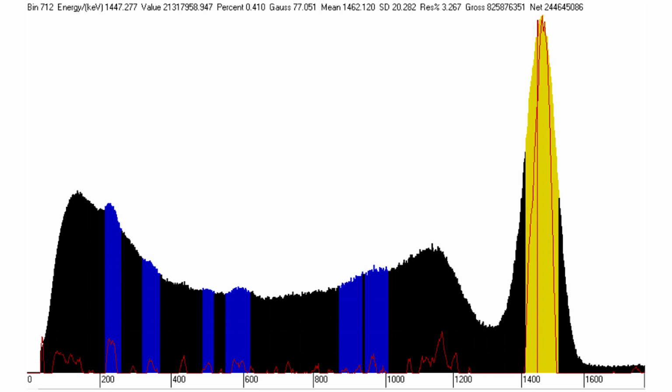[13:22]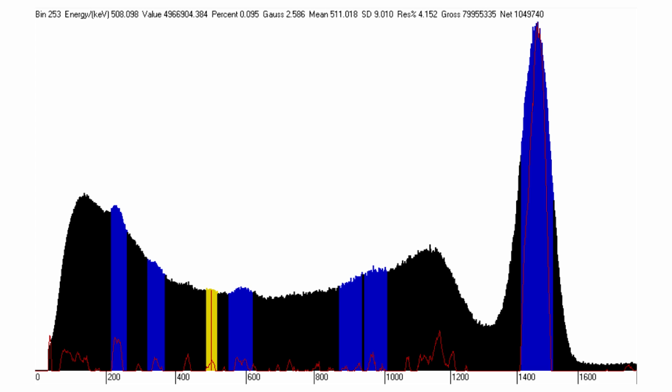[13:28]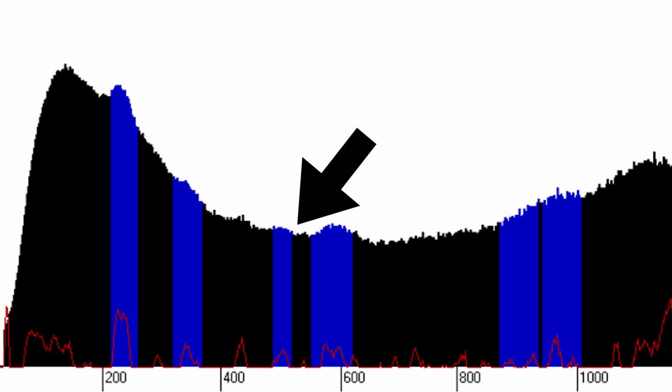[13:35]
Sure enough, there's a gigantic peak at 1460 kiloelectron volts from the gamma ray the potassium puts out, just as we expected. But now if we look at around 500 kiloelectron volts, sure enough, there's a tiny peak. It's really tiny, almost lost in the noise, but the program does see it. That is the annihilation peak.
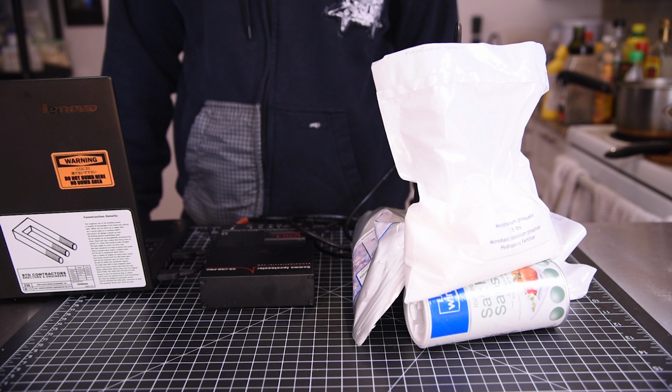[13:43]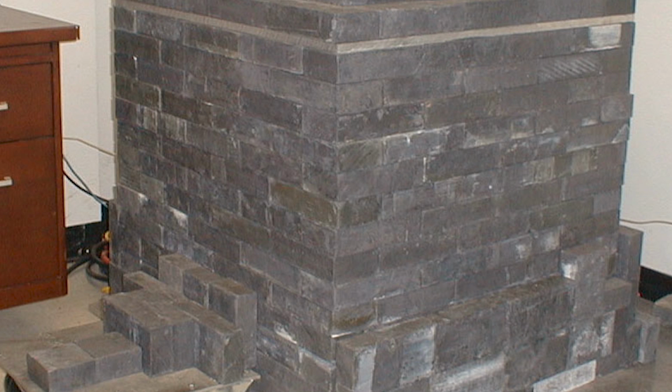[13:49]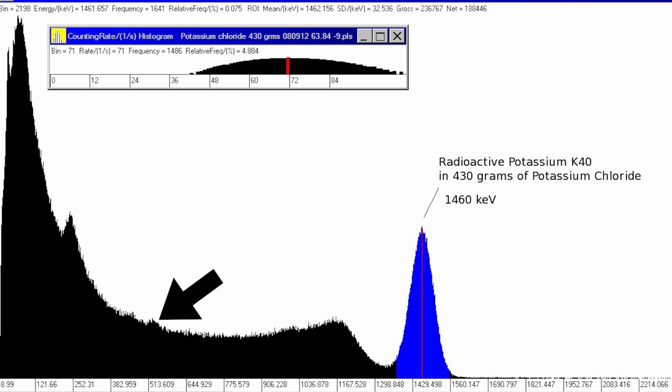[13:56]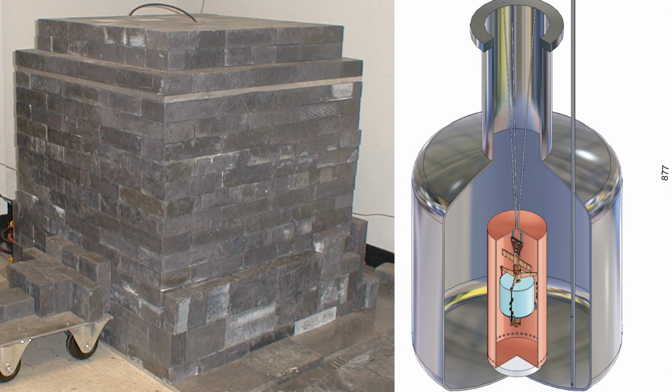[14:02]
One of the reasons it's so hard to see this is because I'm doing this without any shielding, so the ambient background radiation makes this much more difficult to detect. What's preferred is to do this experiment in a lead box with anywhere from 4 to 8 inches of lead on all sides. Here's another potassium-40 spectrum taken by Peter Daly, with much better shielding, and the peak is actually a little more visible. But without either a big lead box or a more sensitive crystal, or ideally both, this is really right at the threshold for what's possible with this setup.
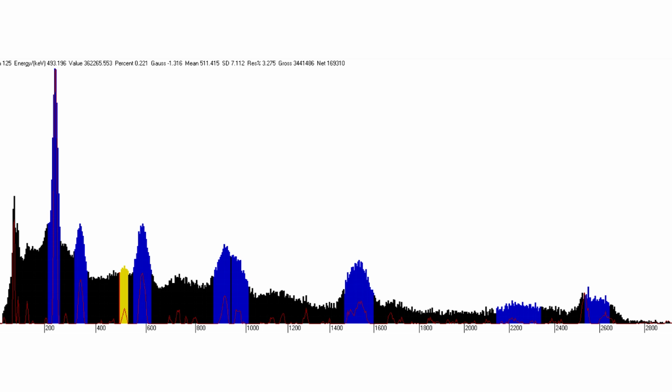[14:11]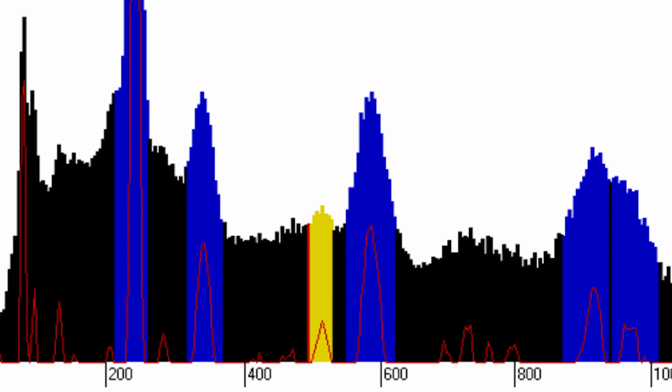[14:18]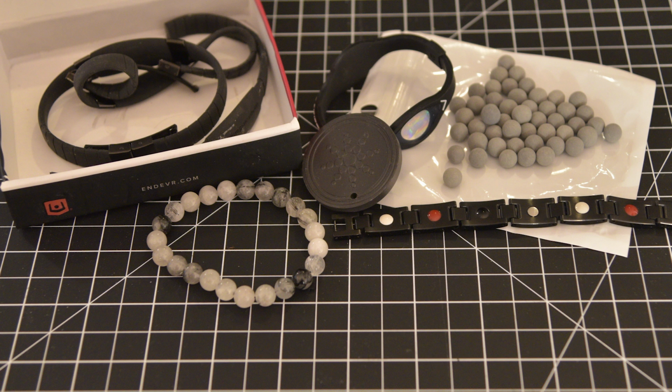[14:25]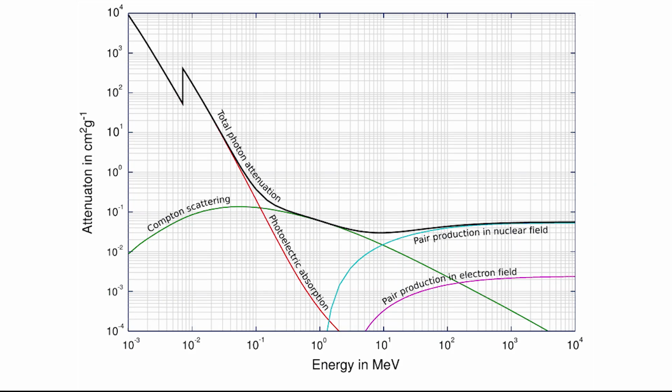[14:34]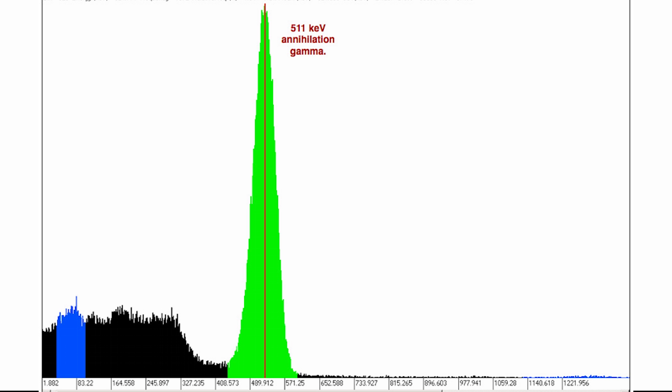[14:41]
As I said before, pair production is more likely the higher the gamma energy is. So on a thorium spectrum, for example, you see the annihilation peak at 511 is much stronger since there's a lot of higher energy gamma rays, which are more likely to undergo pair production. Which, as a fun note, means those quack medicine bracelets also put out a little bit of antimatter on top of all the rest of the radioactive garbage they emit. But no matter what, once we start getting gamma rays above the threshold, we do slowly start getting a small amount of antimatter.
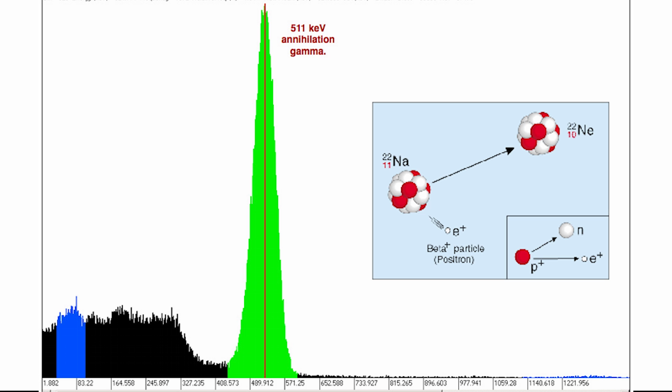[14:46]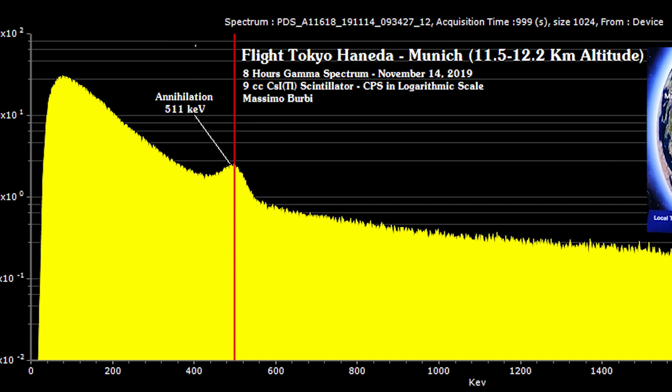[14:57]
All of these pale in comparison to an isotope which just emits positrons directly. Sodium-22, for example, decays directly via positron emission, without undergoing pair production. So the annihilation peak that you get when analyzing it is massive comparatively. Another place where you'll see a very large annihilation peak is actually on an airplane. The atmosphere is so thin where commercial planes fly that the levels of very high energy gamma rays and other cosmic rays are much higher compared to sea level. So you get lots of pair production and a very detectable annihilation peak.
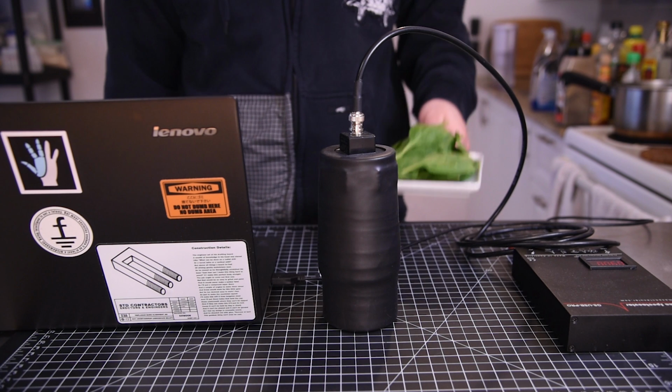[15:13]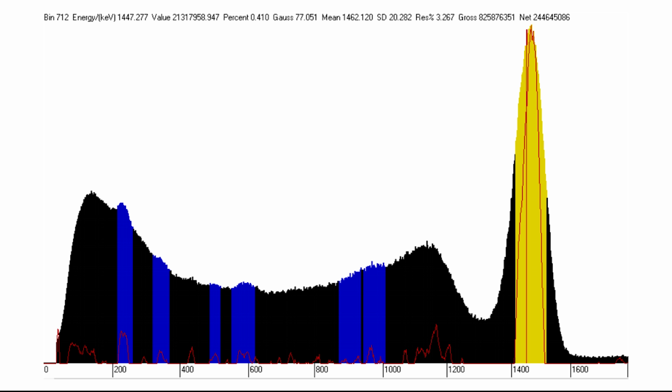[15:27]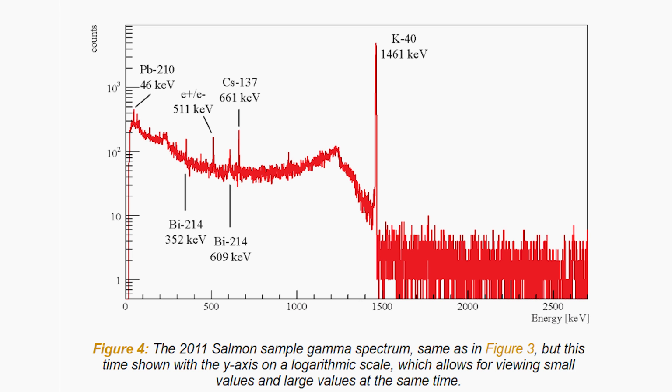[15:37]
If we now measure the spinach, we see mostly the same thing, though of course the annihilation peak is now way too small to see. All living matter has potassium in it, which means a small amount of potassium-40, and as such, you'll always see the potassium-40 peak. And as long as that peak is there, we can be sure that we're getting a few positrons. But the amount of potassium is so low in most things that detecting the positrons with this detector is just not possible.
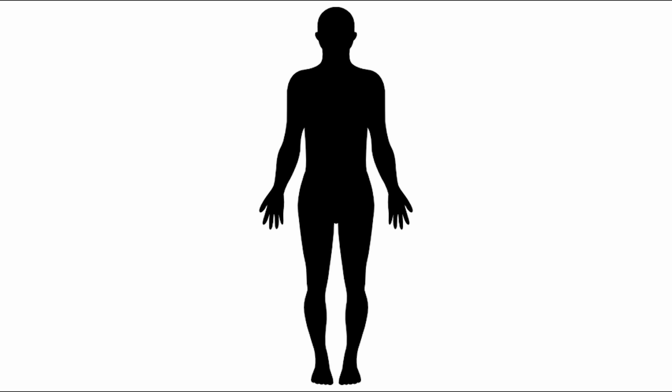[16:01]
However, here's a spectrum taken from some wild-caught Atlantic salmon and analyzed with a vastly better detector. We see the usual potassium-40 peak, and the annihilation peak is now much clearer. We also see some cesium-137, which is a little bit sketchy, but not unexpected for something living in the oceans. Altogether, I hope this demonstrates that since everything you eat has potassium in it, you will always be eating a tiny amount of antimatter. In fact, there's actually a pretty decent quantity of potassium in you already, so part of the radiation that you naturally emit is a minuscule amount of antimatter.
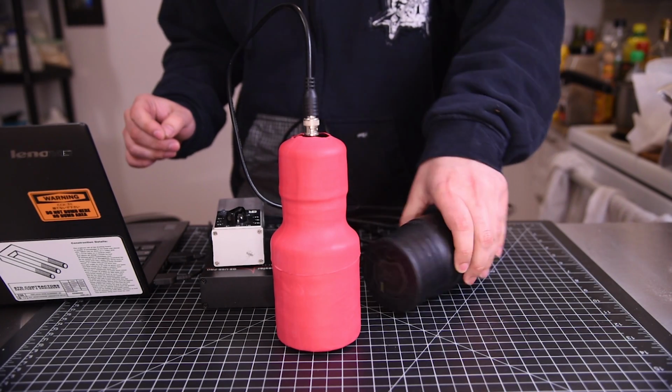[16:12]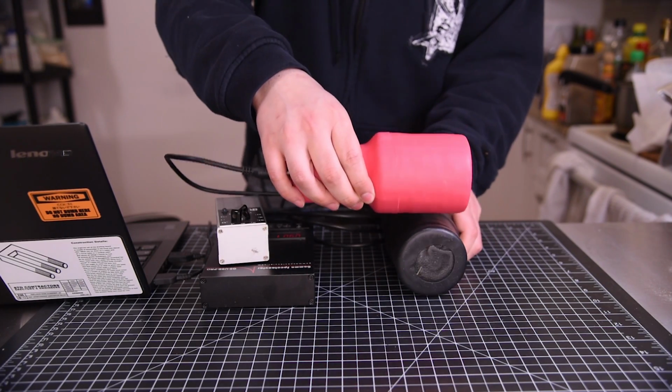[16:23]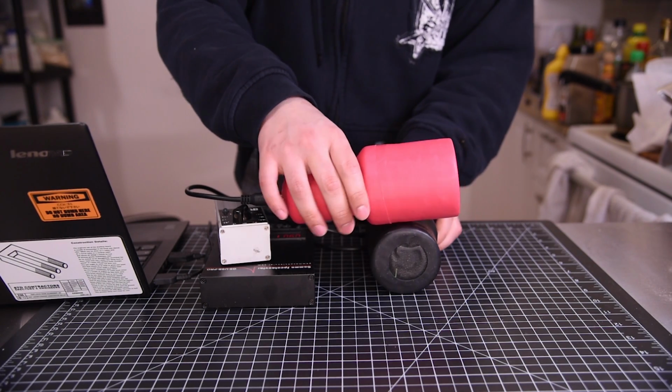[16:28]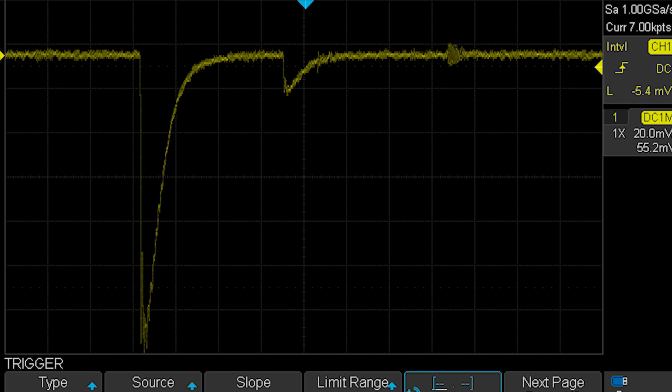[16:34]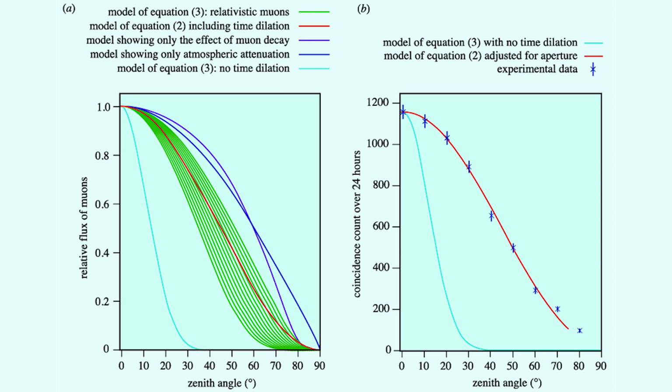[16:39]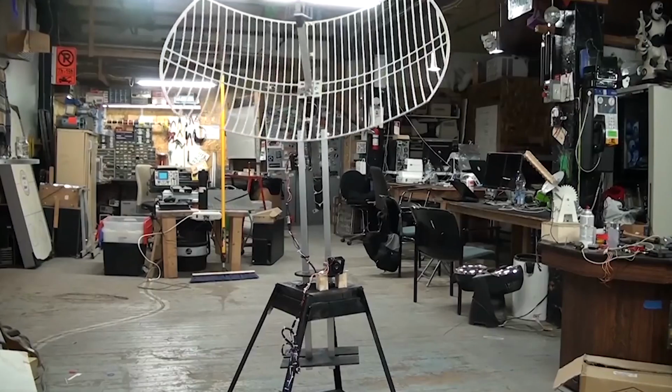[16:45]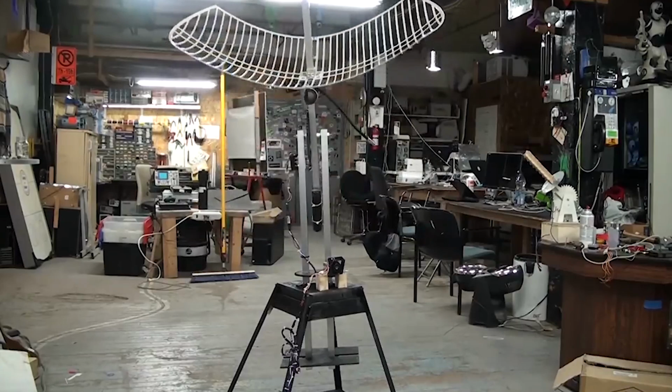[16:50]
In an upcoming video, we'll be revisiting gamma spectroscopy again to look at another interesting technique called coincidence detection. Basically, we connect both probes together and only register pulses that set both off at the same time. This gives directional information, so one experiment is to simply stack them and aim them skyward so we can detect cosmic rays, and even perform some really cool measurements on them. We'll be able to see them decay within the detector into different particles, and should be able to use them to demonstrate time dilation and prove an aspect of special relativity. I'm also looking at maybe modifying Pipsqueak and turning it into a gamma ray camera at some point. But that'll be for future videos, and so I'll leave it there.